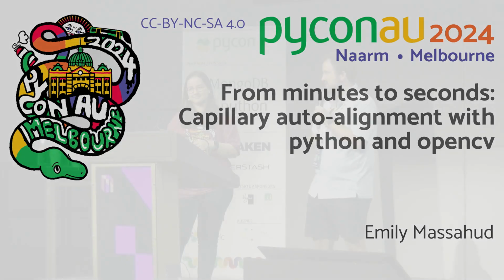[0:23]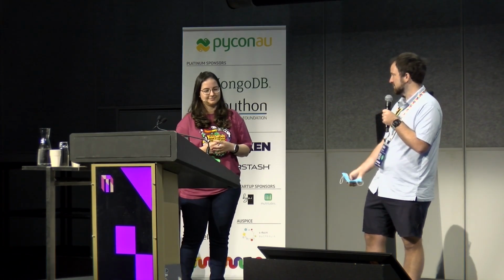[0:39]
Welcome to the last session of the day for the science track. I'm Adam emceeing, and we've got Charles doing the timings. We've got 3 talks for our last session. First up, we've got Emily Massahud, who's going to talk on from minutes to seconds capillary auto alignment with Python and OpenCV. She's a software engineer with Ansto. So I'll let you get into it.
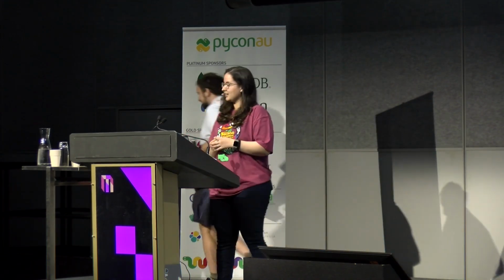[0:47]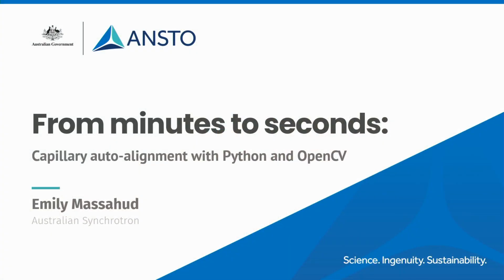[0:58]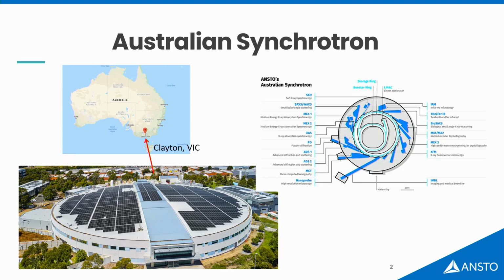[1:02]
Thank you. Hi, everyone. Today, I'm here to talk to you about some automation work I did over at the Synchrotron. I used Python, and I used OpenCV. But first, let's take a step back. Why and for whom?
If you're here earlier, you will have heard a version of this. Mel has done a talk also about the Australian Synchrotron. For those who weren't, you're here for the first time. The Australian Synchrotron is a government research facility. We're part of Ansto, and we're just over there in Clayton, right next to Monash. In a synchrotron, what we do is we accelerate electrons very fast in order to produce beams of light. Usually, it's X-rays. And what do we do with these X-rays? We use them to look at a bunch of different samples with instruments that we call beamlines.
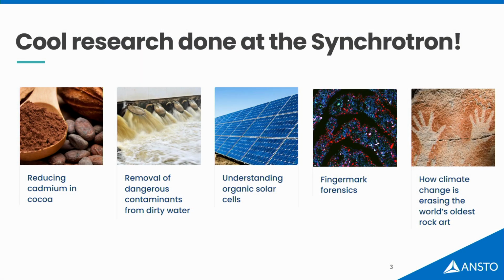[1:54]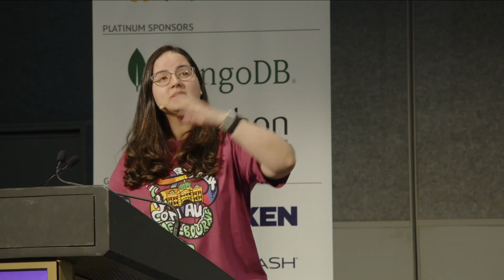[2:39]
We have people from all over Australia, all over the world, really, coming to do a bunch of cool stuff with us. So there's food science, environmental applications, energy, defense, cultural heritage. It's a bunch of cool stuff being done there. We have the advantage of producing data with more accuracy and quality, and we can do things much faster than if you do it in a normal lab. So a lot of people want to come and do research with us. Every year we receive more than 5,000 people to use our beamlines, our instruments, and over the course of the history of the synchrotron, over 3,000 publications have come through peer-reviewed journals of work that has been done at the synchrotron.
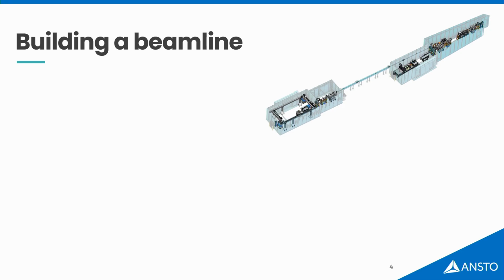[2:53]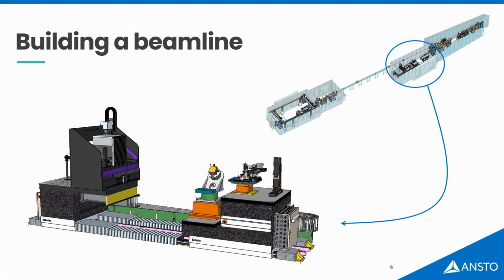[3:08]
For the past 2 years, I have been part of a team that is building a new instrument, a new beamline. Beamlines are very complex instruments, but I'm going to show you 3 main components that will be important for our talk today. First one, X-rays, the light source. Second one, where the sample is, so the sample stages. And the detector. The detector is a camera, but it's a camera that sees X-rays and not visible light. So X-ray goes through the sample, interacts with it, and then whatever comes after is detected by the detector.
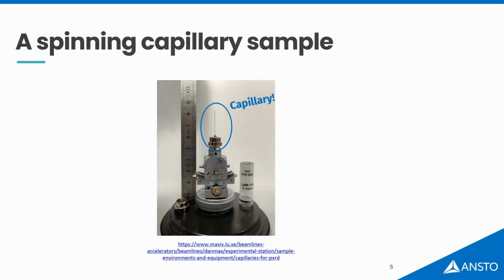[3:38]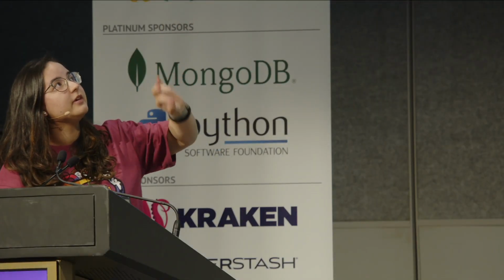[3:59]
This beamline that I'm helping put together is going to do a type of experiment called X-ray diffraction. For that, you have to put your samples in a capillary. Think of a straw, but made of glass, and only 1 millimeter thin. That's what the capillary looks like, and you put a very, very fine powder inside. After you do that, you put that in a stage, much like this one, and you need to have it constantly rotating in front of the X-ray all the time while you do your experiment.
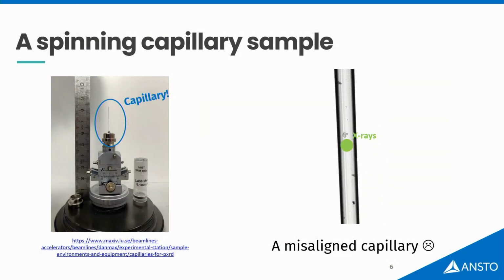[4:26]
You need this rotation to be very aligned because the X-ray path is coming through, and as it rotates, here's what cannot happen. This is a misaligned capillary. So if it rotates all the time, if it comes off of the X-ray path, you're not going to acquire quality data. We have to align this capillary.
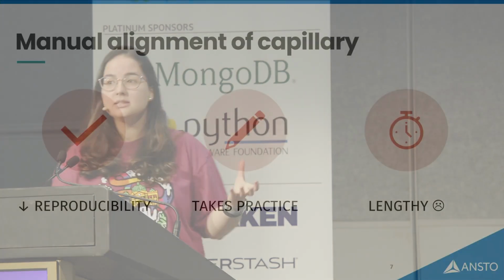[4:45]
Back in the olden days, people used to do that manually. So basically, the stage has manual knobs. You go, you tweak them, so you untilt, you move it a little bit until you see that it's rotating completely aligned to the rotation axis. Although this is not easy to do, it takes time to learn how to do it. Also, it takes a couple minutes per sample. And like I said, the synchrotron needs to do things fast. And people come to the synchrotron with like 50 capillaries they want to analyze. So it would be a pain to do each one of them by hand.
But we don't have to do it by hand. We have Python, and we have motors. So I say, let's automate it.
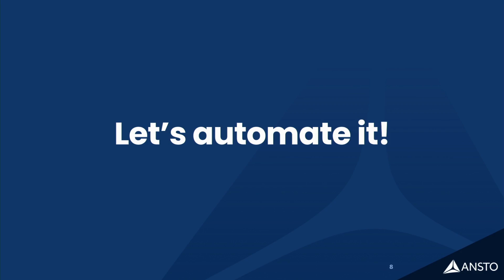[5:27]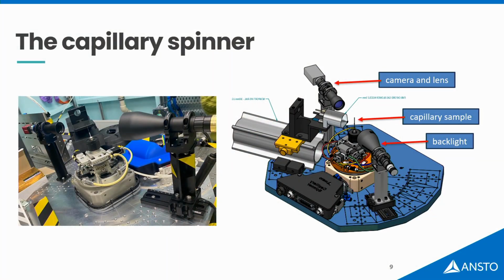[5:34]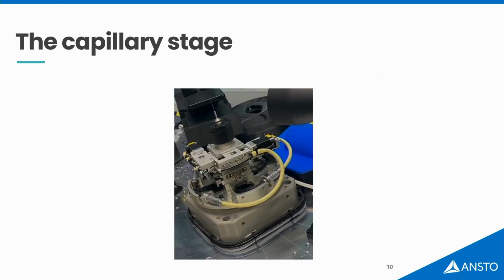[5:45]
This is the setup that I had. So it is a camera, a backlight, just to give a good contrast of the image that you'd see, and then the capillary sample that's mounted on this motorized stage. This is the stage. This stage has 5 axes of movement, so it moves around in X, in Z, it tilts in X, it tilts in Z, and it rotates around its axis.
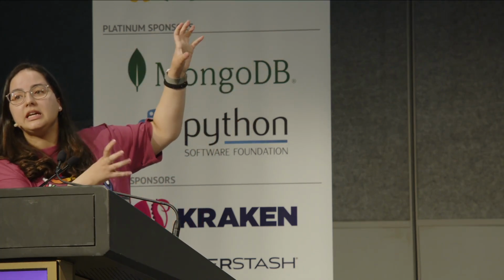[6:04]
My task was, look at this capillary with a camera, see if it's badly aligned, and then you use these 5 motors to put it in place and ensure that it's rotating perfectly. Okay, I have motors. How do I talk to them?
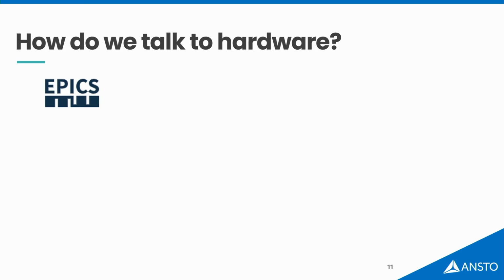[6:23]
Our facility has this motion control system that's called EPICS. EPICS is something that's been around since the early 1990s, and it's used in telescopes, fusion reactors, synchrotrons, other particle accelerators. And EPICS is a way that your motor gets a name. So let's say I have motor X. It's called beamline motor 1 X dot value. EPICS gave it a name.
If I want to tell this motor, OK, please go to position 5, you say CA put, the name of that motor, and the position you want it to go. If you want to check whether it's in the place you want, you do CA get, the name of the motor, and it'll output the current position of that motor. And you can do all of that from the command line, by the way.
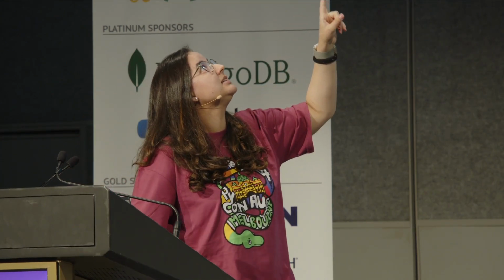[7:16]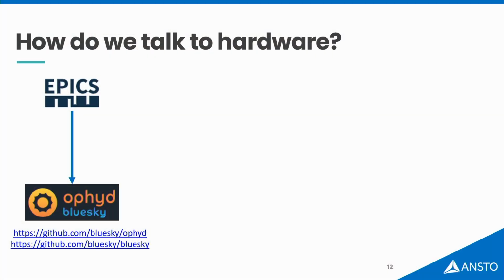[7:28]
Now we need a way to get EPICS to talk to Python. And we do that with 2 cool open source packages called Ophyd and Bluesky. Basically, Ophyd is a library that allows you to put your motor names with their EPICS names that they have in a Python class, and all of the components that they have will be the specific motors for that stage.
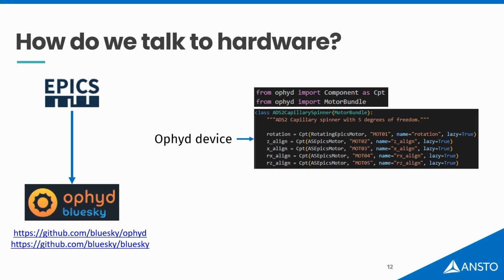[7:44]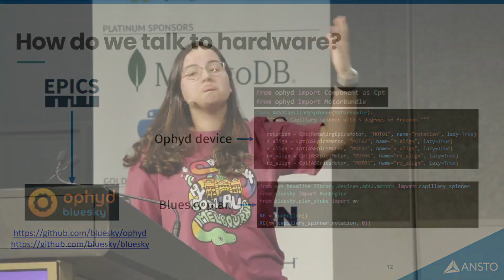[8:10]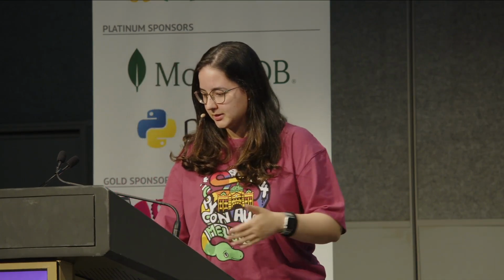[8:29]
While Bluesky grabs the instances of those classes, and then it does stuff to it in what they call Bluesky plans. So they have a simple move plan that I just grabbed from their library, and I told the rotation motor of my stage to go to position 0. As soon as I run this, my motor is going to rotate until it reaches 0 degrees, and that's it. That's all we have to do to interact with the motors via Python. These 2 libraries, they've been developed by another synchrotron over in the US, and they are used in a bunch of other synchrotrons around the world.
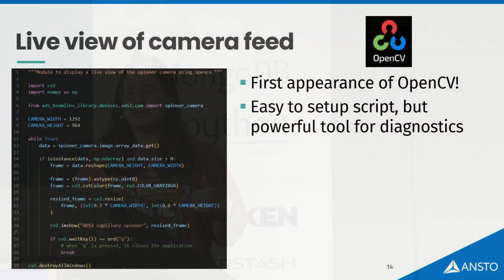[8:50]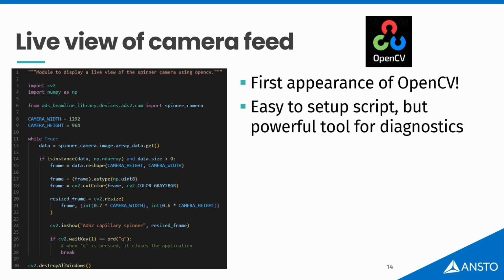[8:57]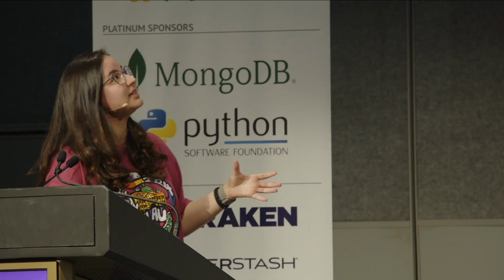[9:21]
OK, so that was the tools to talk with the hardware, but now we need the logic to make it happen. And yes, that will involve math. I'm sorry if you don't like it. The first thing I had to do was to give myself a way to visualize what was coming out of the camera feed. And that's the first time that I had to use OpenCV in this project. For those who don't know, OpenCV is a very powerful tool. It's also an open source project, and it's very powerful in computer vision and image processing in general. It is built mostly in C++, but it has a Python wrapper to it, which is very lucky for us.
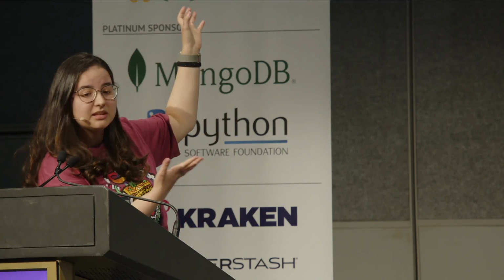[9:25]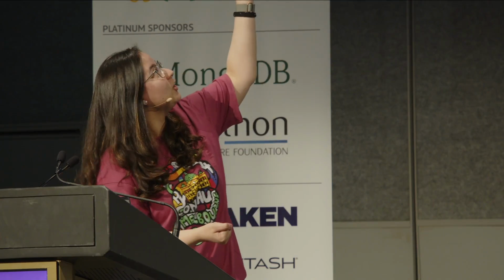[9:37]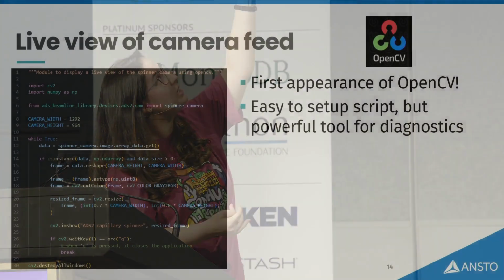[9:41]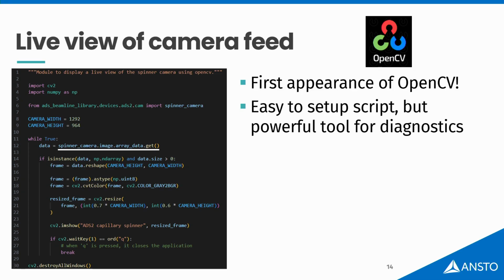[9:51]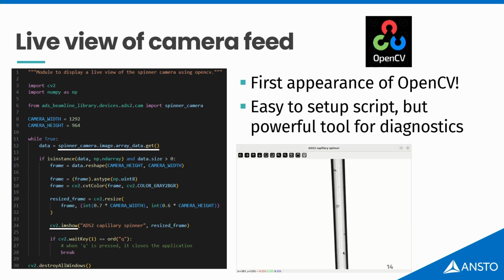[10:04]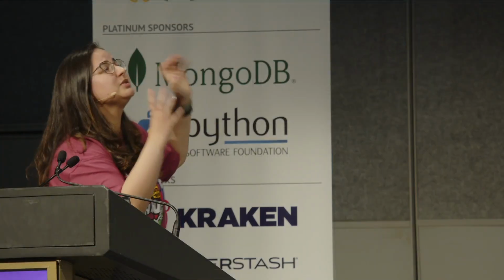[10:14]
So I put together this little script. I don't know if you can read it well. It is quite short. There's nothing much to it, and that's why I wanted to show. It's a while loop. I am grabbing frames from the Ophyd device. So if I do get to the image that comes out of the device, I can get a live feed of what the camera is outputting for me. And then I put that in a while loop. I just play around with the size of this data, the shape of this data, and I use OpenCV's imshow to continuously consume the frames, and that gave me a live feed. And that was it. That's what it looks like. This is stationary, but if I move the motor, I would see the capillary moving in real time now. That was super easy, and that was super, super helpful as a debugging tool, because that was my eyes during the project.
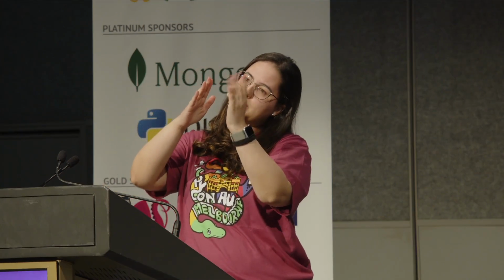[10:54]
I had eyes, but now the computer doesn't have eyes, but it needed a way to see the capillary and a way to make decisions on what to do to align this capillary. So the strategy that we came up with was, okay, let's think of this capillary as a line segment that goes through the center of this capillary, and the important things we need to know about this line segment is its slope and its intercept in the image, at the bottom of the image. That's how we're going to think of this capillary from now on.
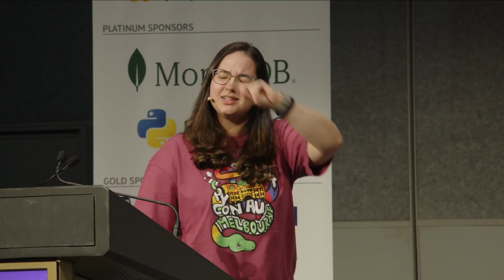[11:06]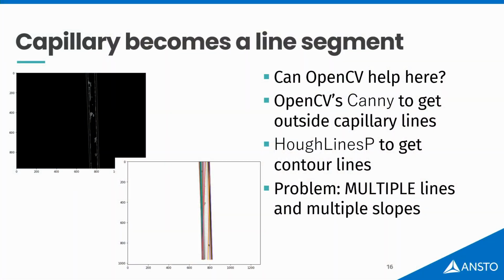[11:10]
And I thought, OpenCV again. It's going to help me. It's going to be quick. I'm going to do this in no time. But I was wrong. So my idea was to just get the edges of the capillary using Canny from OpenCV, and then use Hough lines to get the slope of these. And then if I got the average of all these slopes, I would get a nice line at the middle of the capillary. But I didn't.
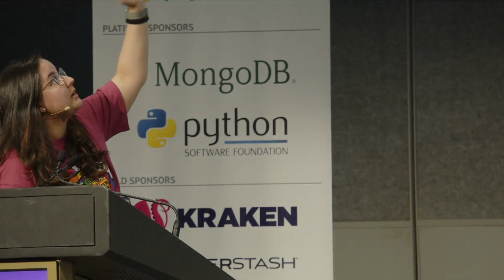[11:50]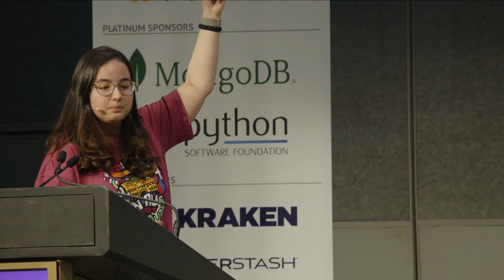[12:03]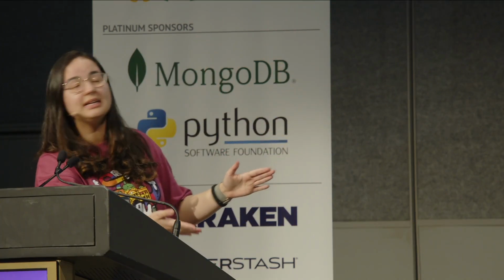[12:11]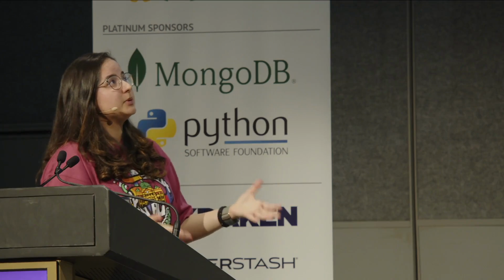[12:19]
The capillary is something provided by the users that come to use our facility, and they can look like anything. I was expecting a nice black solid thing. This is a purposefully bad capillary that I used, because this has to work in the worst case scenario, right? So the edges that we ended up getting for capillaries that were not completely filled, it was bad. So when you try to find Hough lines from this Canny, from these edges, you end up with a bunch of lines, many, many more lines. I was expecting one for each edge of the capillary. I ended up with like 20, and they all had different slopes because they were picking up on artifacts from the image.
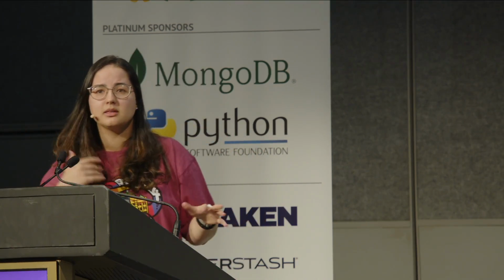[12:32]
So that was a problem, and because we don't know what kind of capillary is going to come through the facility, I had two options. I could try and sample as many capillaries as I wanted to try and make this algorithm work for different types of capillary, but then I'm like, no, I did this to help me. I wanted a simple method that would get me my line, and that's just going to be so much more work than it was worth. So I ended up not doing this.
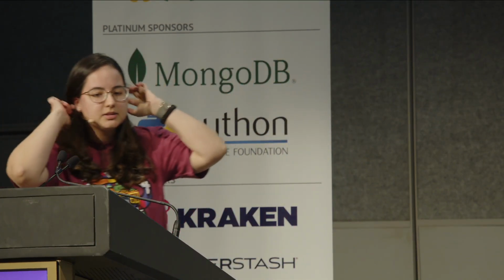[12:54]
And what I did instead, I still use OpenCV, by the way, but I used it to just give me a binary image. So I just applied some Gaussian blurring, and then I did some thresholding. So it's ones and zeros now. Now I have a binary array that tells me, here is capillary, or here is not capillary, with ones and zeros. And that's so much easier for me to work on from now on.
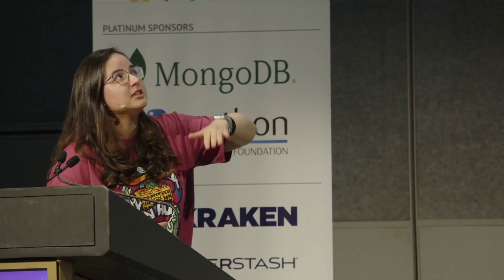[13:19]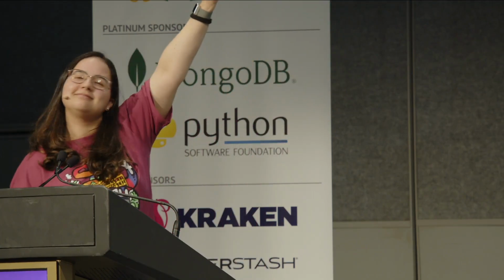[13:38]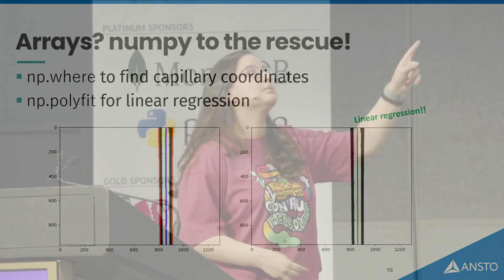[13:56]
Because if I look at this binary array row by row, I'm going to look at where the capillary starts, where the capillary ends, which will be where the black starts and ends. And then I'm going to find the middle of that for all of the rows. And then I'm going to have a midpoint throughout the capillary. That's what I did with NumPy. So if you see the red lines, they're actually points, but because there's so many of them, it looks like a continuous line. For each row of this array, I got start, end of the capillary, calculated the blue dots, which is the midpoint of this capillary. That was not a straight line.
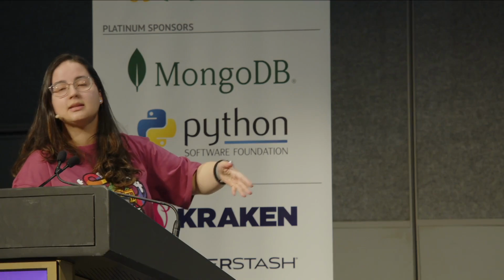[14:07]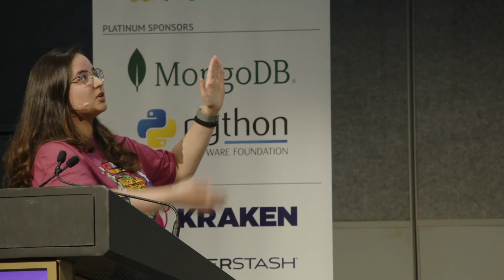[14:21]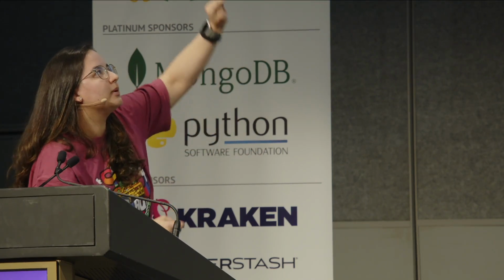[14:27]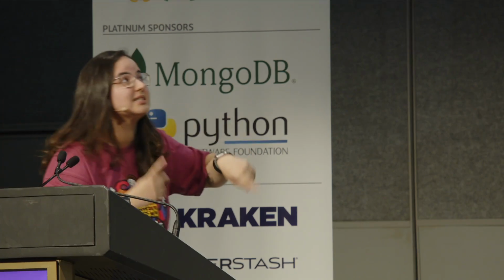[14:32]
So again, NumPy, I use NumPy's polyfit, which basically allows you to fit a polynomial to a set of data points. I said, first degree polynomial, please. And that's basically a linear regression. The advantage of this is that even if my capillary was really, really bad, I was able to get a start, an end, and a midpoint. And because it's linear regression, if I have one of the points very far off, it might skew things a little bit, and I took care of that with some statistics. But the idea is that the slope of this line will be pretty good if I do a linear regression.
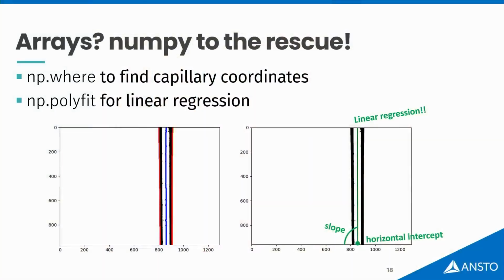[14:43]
And it worked. With that, I could get slope and intercept. And from now on, that's how we think of the capillary. A capillary is a slope and an intercept in my image. And that worked, and that was helpful.
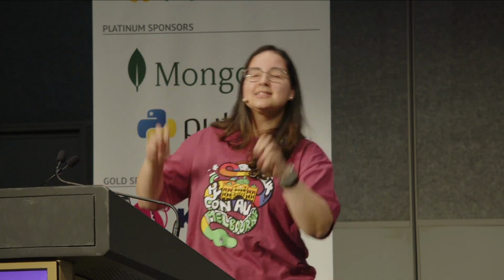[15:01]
Okay, I have eyes. The computer has eyes. So now we have to coordinate how we move the motors in the stage with what the camera is giving me as an output for how the capillary is moving. If I move left, what happens to the capillary? If I move right, if I tilt this way or that way, what happens?
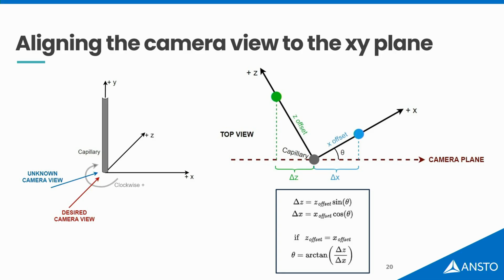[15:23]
Here starts the math journey. So the first thing that I had to do was understand the orientation of the stage in what the camera plane would see. Basically, my goal was to make sure that the x-axis of my stage was aligned to my camera view. Because if I had that, if I move Z, the capillary would just be moving back and forth, and I would see no displacement in the camera. So the capillary would stay stationary in the image because it's just moving in depth. And if I moved in X, then I would know that it was a faithful representation of what the X movement looked like, motor versus camera image.
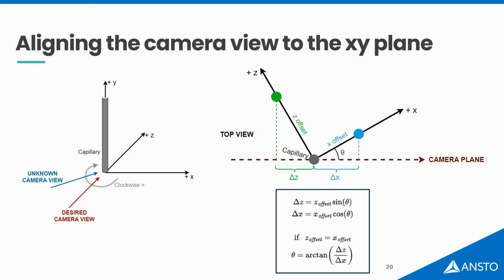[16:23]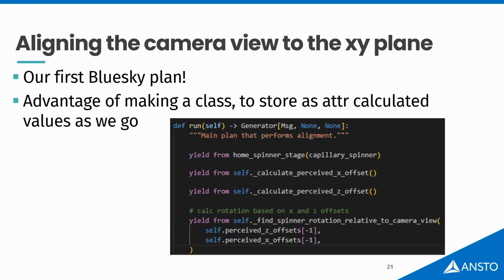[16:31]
And to find that out, there's trigonometry and some math. So if you find that theta angle, you'll find out how much you have to rotate that by, and then you'll have this x-axis aligned to your plane. And how did I do that? Bluesky. So that's when I wrote my first Bluesky plan. So a Blue
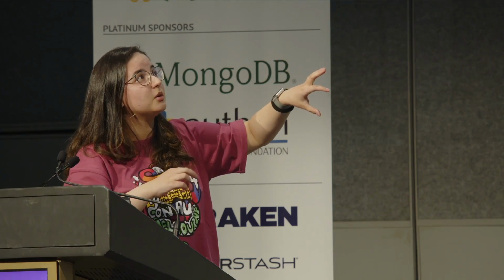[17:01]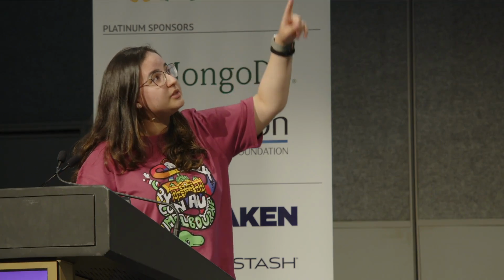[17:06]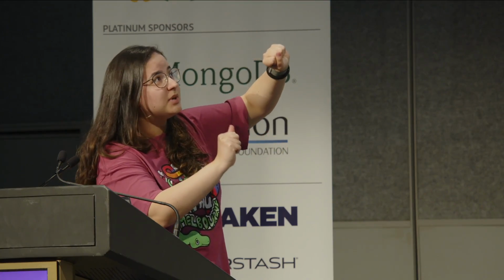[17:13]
Bluesky plan is a generator, and it's a generator that you can put a bunch of small chunks of other plans into, so it doesn't get crowded, because we're talking here about doing a bunch of calculations, getting a bunch of slopes, intercepts, moving motors here, there, and so on. And if you just use the syntax yield from, you can do different parts of this alignment and have a single calibration that's still wrapped up and concise.
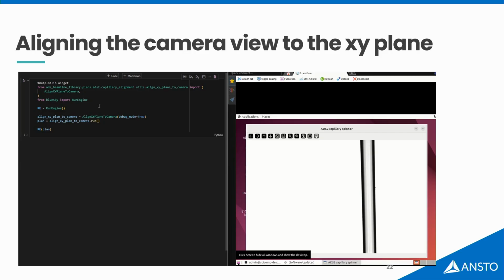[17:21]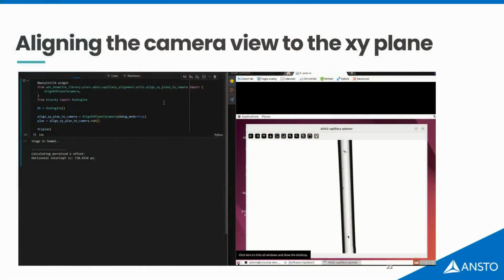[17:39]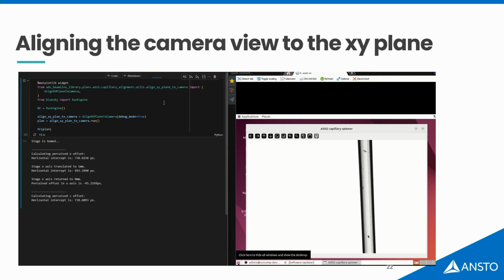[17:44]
So I ran this on a Jupyter Notebook. You see that the syntax here is quite simple. I just tell the blue sky plan to please run. So if I run that on Jupyter Notebook, it's going to give me a bunch of print statements. By the way, this was another debugging tool. Print everything. Just let me know anything that's going on, every motor that is moving, what calculation you're doing, what do you see right now? The computer let me know. And that was, by the way, another important debugging tool for me.
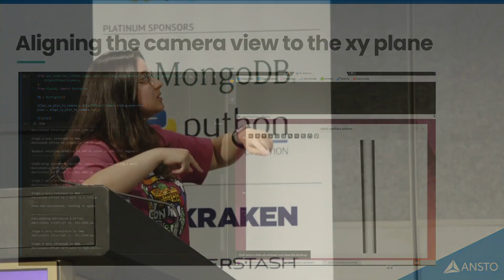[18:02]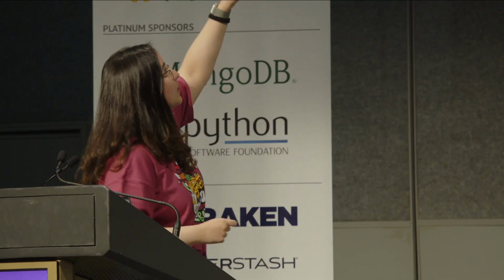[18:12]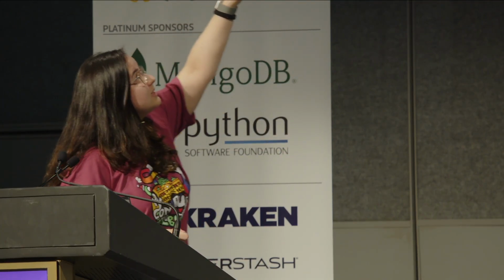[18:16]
I would see, okay, it's moving this many pixels, it's twisting in this direction, and so on. And this even had a way of knowing, okay, I finished doing this alignment, did it work? If it didn't work, it's going to run it again, which is what happens. And at the end, we see that the rotation is about 110 degrees. So if we grab that stage, rotate it by 110 degrees, now we've aligned the x-axis to what we see in the camera. Good.
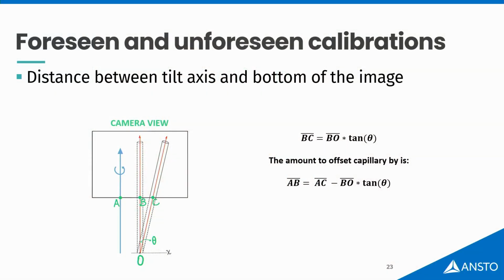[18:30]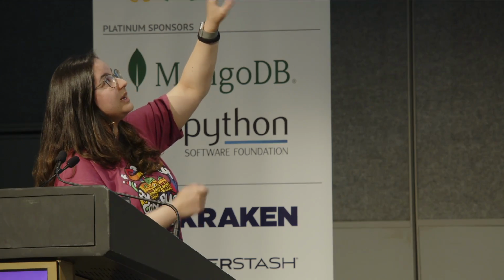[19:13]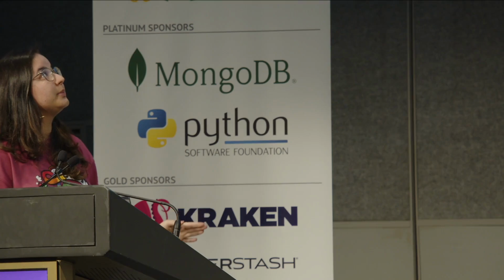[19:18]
We had to do a few more of these calibrations before we were ready to run the main alignment plan. And yes, a bunch of them involve math. This was a cool one because this specific thing allowed me to bring down the alignment from around 30 seconds to 5 seconds. So what this did is, if I find the point O in my image, which is where the tilt axis of my capillary is in relation to the bottom of the image, then once I untilt my image, I'll know this distance BC, so how much it'll have moved by, and then I need to only calculate AB, which is how much I'm going to offset it by, and then my capillary will be on its axis of rotation, which is the point A.
I did this because if I measure this once, then if I take a snapshot of my capillary, I know I can move all of the motors at the same time. I have a value for how much I have to offset. I have a value for how much I have to untilt, and that can be done so much faster.
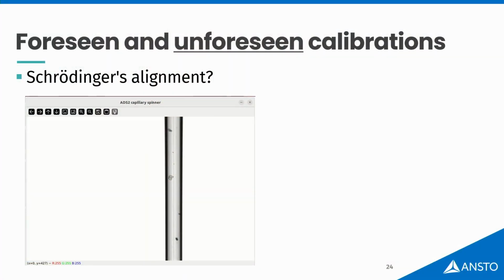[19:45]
Okay. This one was a bit of a nightmare because I finished my plan, I untilted, I offset. It looks straight. The blue sky plan said it was straight. But then I rotate it to make sure it's straight. And it's not straight. And then I added Python code. I doubted whether I knew OpenCV. I doubted if the motor was giving me the right place. Is that 1 degree? It's not 1 degree. You're lying.
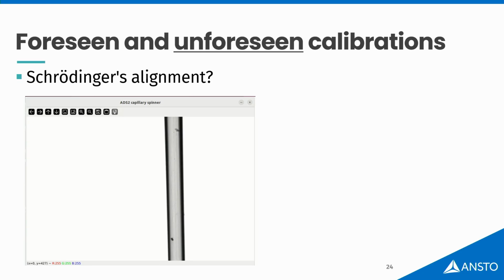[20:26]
I doubted so many things. I debugged for a long time. Print statements, matplotlib plots with slopes, intercepts, nothing. I couldn't find out what was happening. And then, one day I was not doing this, I was doing something else. I met one of our scientists, and I briefly mentioned it. He asked, how's it going? I said, oh, I have a problem. I can't figure out what's happening.
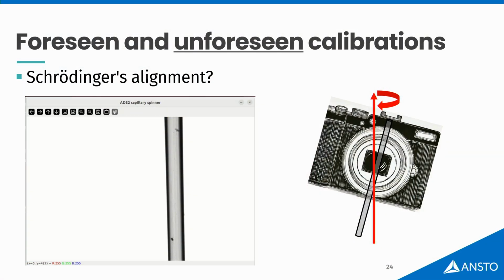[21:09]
And then he looked at me, he said, huh. And this person, he's got like 20 years in the facility, so I'm pretty sure he's seen it all. He looked at me and he said, I've seen this before, Emily. You know what it is? The camera's crooked.
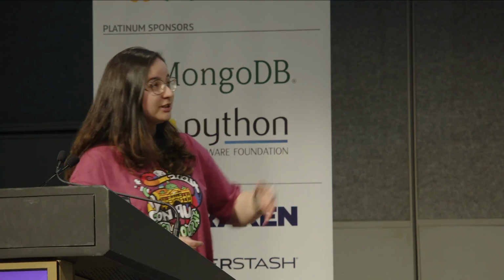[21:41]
Look at this. Tell me if that's not what's happening. The camera is placed manually on the stage. And it's very well placed, because this crookedness that I found was like 0.8 of a degree. It's very good for manual placing, but it was not 0. So of course, we would see a difference in a capillary that's 1 millimeter thin. Fortunately, I was able to fix that, and I was able to factor that into the code. And we can align the capillary now.
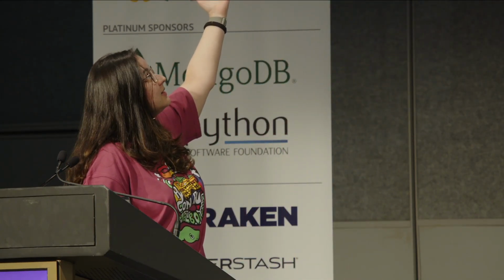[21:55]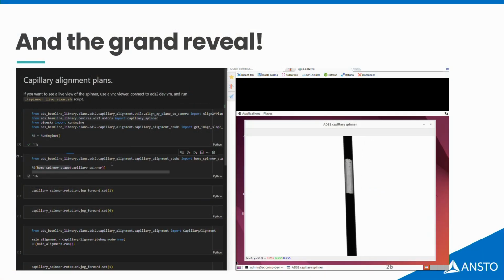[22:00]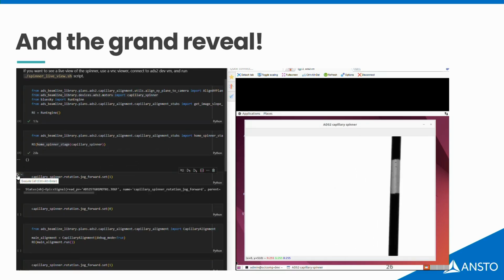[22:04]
So again, another Bluesky plan. This one is just going to home the stage, bring all of the motors to position 0, and then I'm going to use the ophyd device to continuously rotate, just to show you that it is not aligned. It's even nodding, no, it's not aligned. And then it's just going to run the alignment plan. So I just have this run.
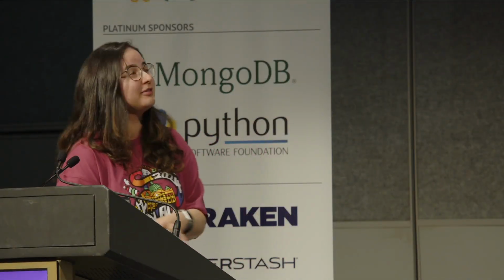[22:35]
Ready? Done. And now you see that all the motors only took 1.7 seconds to move. And if I rotate this again, ta-da, it's aligned. So it was a lot of tears, sweat, craziness, talking to other people. But finally, we did it, and it's 5 seconds. Done.
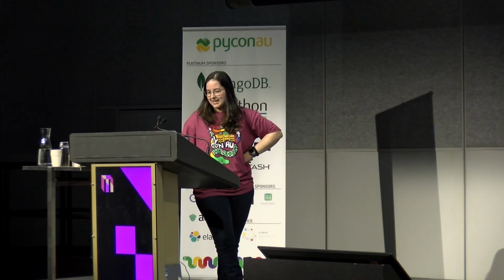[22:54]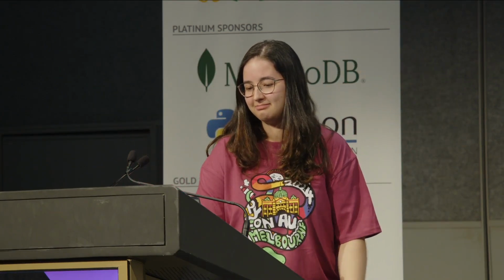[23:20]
Few things I learned doing this. The facility has 150 people. We have scientists, we have mechanical engineers, electrical engineers, controls engineers, scientific computing. We have it all. Physicists, chemists, biologists. Yes, I needed them all. Without them, I wouldn't have finished all of this.
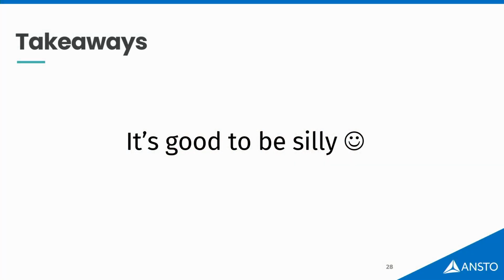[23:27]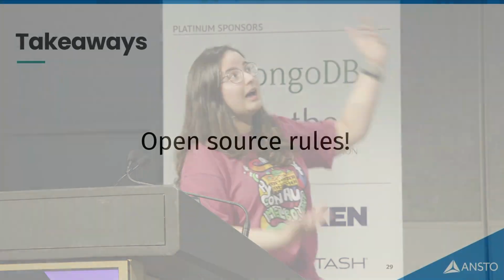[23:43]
I was silly. I printed everything. I printed, okay, I am moving this motor by this much for this reason, because I needed to know what the computer was doing at all times so my brain could understand what it was doing, and then if a problem came around, I knew how to fix it. And I did it all with open source code. So OpenCV, Bluesky, Ophyd, NumPy, Matplotlib, all these tools, open source, and they were enough, and math, for me to finish quite a complicated project.
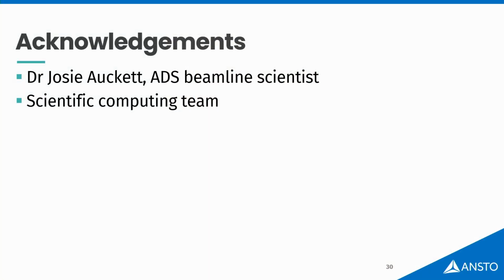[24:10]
Here, I just wanted to thank a few people. First one is the scientist for the beamline that we're building, Dr. Josie. She was my go-to. She was the person I cried to, asked for help in math and in logic and everything. And of course, the scientific computing team, which helped me with code, helped me with pull requests for the length of the 6 months that I was doing this project. Thank you, PyCon, for having me.
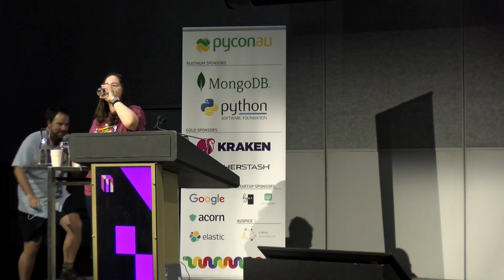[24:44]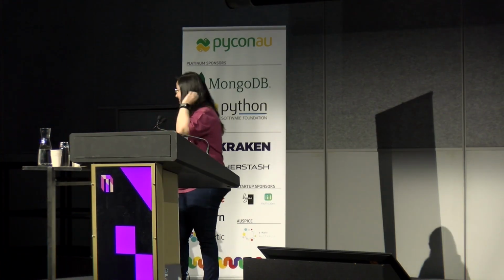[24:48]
All right. Thanks, Emily. That was an awesome talk. Very great story. Any questions from the audience? We've got time for 1 or 2.
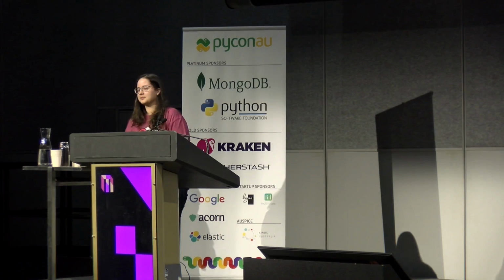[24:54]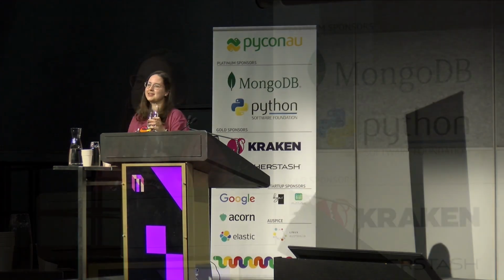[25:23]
It was a great solution and that you got there in the end. Is the camera mounted on some kind of staging thing that can also be software controlled, and is that how you fixed it? No, I didn't move the camera. I calculated what was the tilt, and I factored that into my code. So I knew that if my capillary was placed at a 0.4 degree, it was aligned. If I can't move hardware, I'll fix it in software.
That camera, was that hard-coded, the tilt, or does it change and you have to recalibrate? If you bump it, let's say someone is mounting a new sample, they bump the camera, that changes. So you have to recalibrate in the future. Yeah, good.
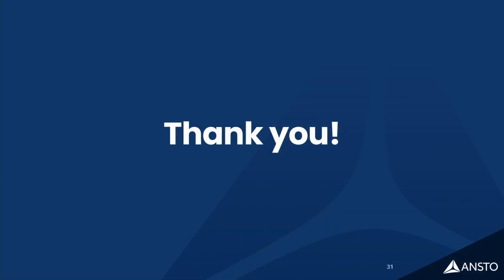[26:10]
Did the system have any awareness of where the X-ray beam was going to be? Like, did it get it in the right position? That is not factored in this part of the code, because below this stage that I was moving with 5 axes of movement, there's another stage that moves in X, Y and Z, because our Y is height. So that is done with a different type of calibration, and it is related to Mel's talk from this morning about commissioning tools. We have to wait until we have X-rays, and then we move this stage below, and then we see where's the place where we can align this whole chunk of thing to the X-ray. Right, okay, thank you.
Awesome. We might call it there. Thanks heaps, Emily. I'd like everyone to join me in thanking Emily, and we'll come back in